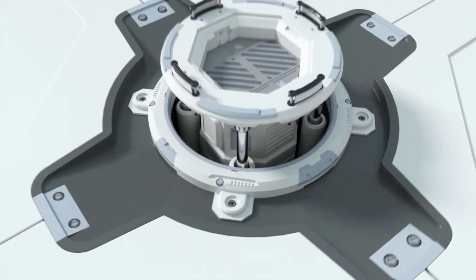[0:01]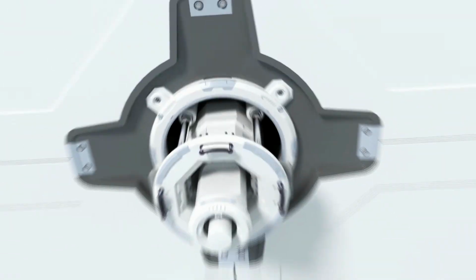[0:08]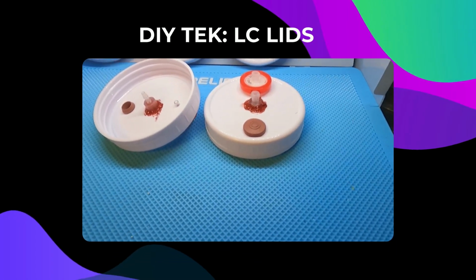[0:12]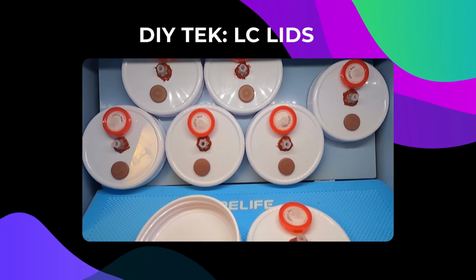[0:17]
Welcome back, fungi friends. Check out these beautiful liquid culture lids. Want to make your own? Stick around, we'll show you exactly how.
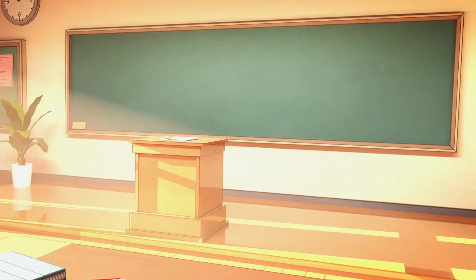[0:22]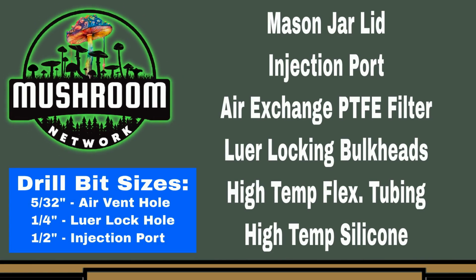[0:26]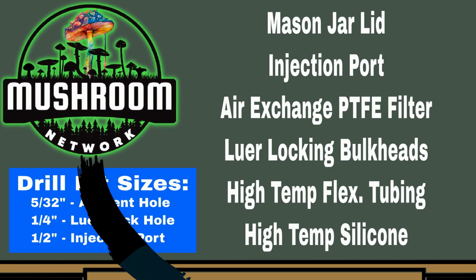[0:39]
For this do-it-yourself tech project, you'll need a mason jar lid, injection port, air exchange, PTFE syringe filter, luer lock bulkheads, high temp flex tubing, and high temp silicone. Let's get into it now.
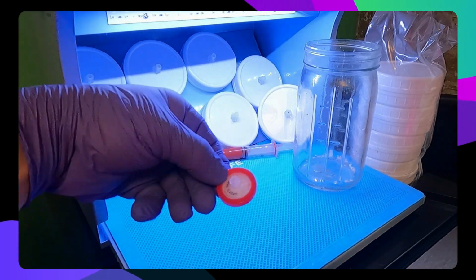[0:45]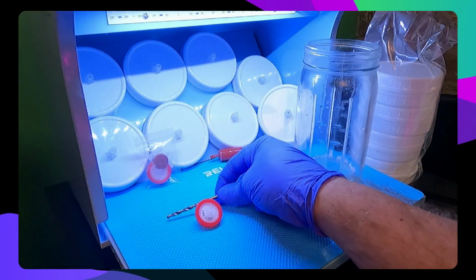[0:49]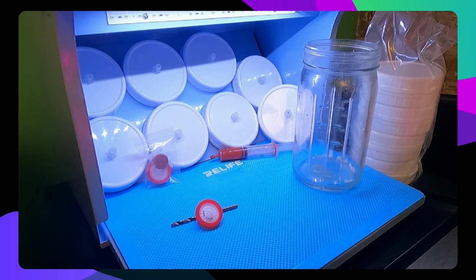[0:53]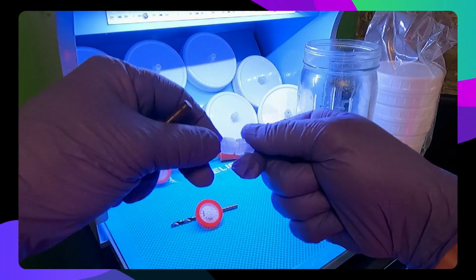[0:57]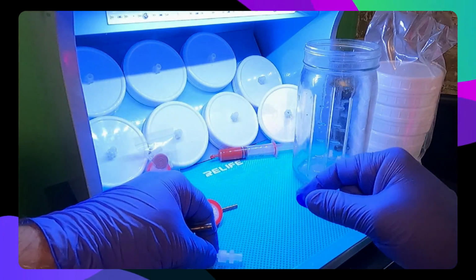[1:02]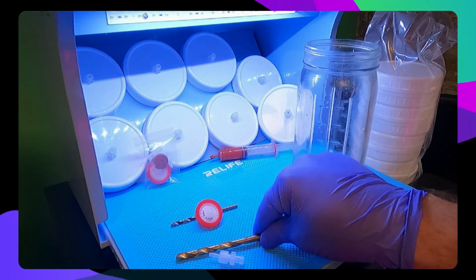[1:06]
Alright, gather round. We're going to let you in on a little secret. You see, during our initial recording of this how-to video, we got a bit carried away with our excitement. We jumped ahead and started installing components and adding silicone before drilling all the holes. Talk about putting the cart before the horse, right?
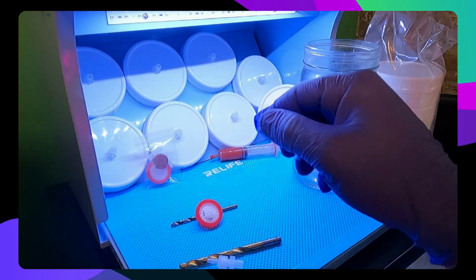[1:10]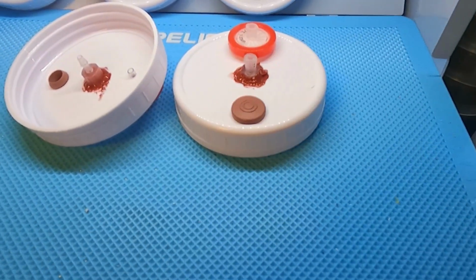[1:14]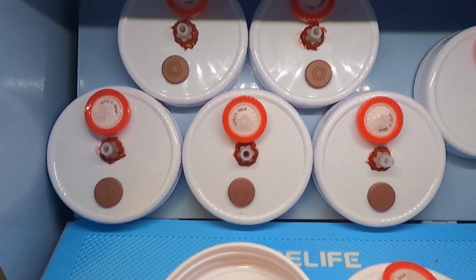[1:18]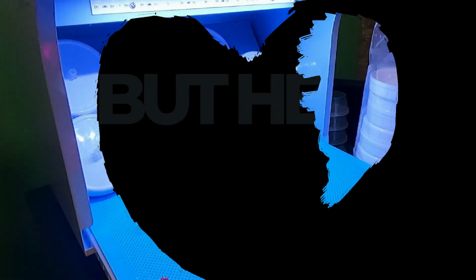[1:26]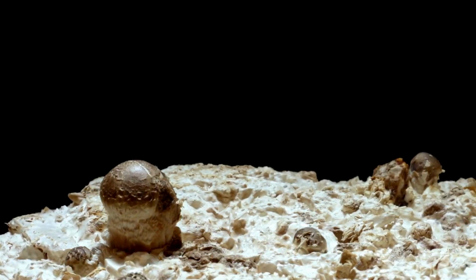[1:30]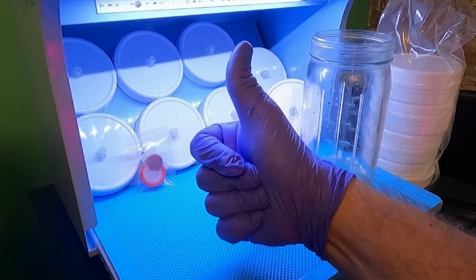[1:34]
Don't be like us. In this one video take, do it the smart way, the efficient way, the Mushroom Network way. Drill all 3 holes first. Yes, you heard it right, folks. Holes first. But hey, no one's perfect. We're all here learning and growing together, one mushroom, or in this case, one hole at a time.
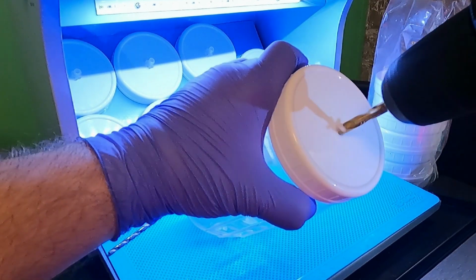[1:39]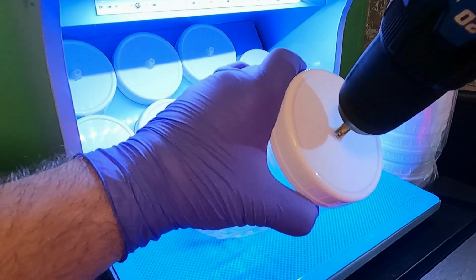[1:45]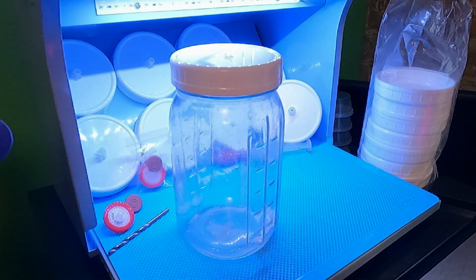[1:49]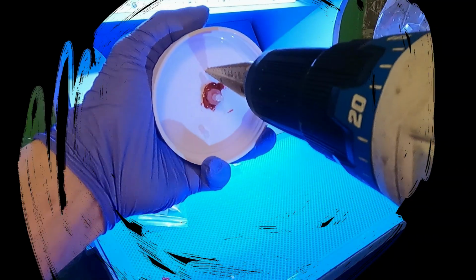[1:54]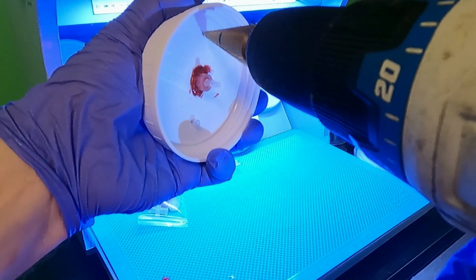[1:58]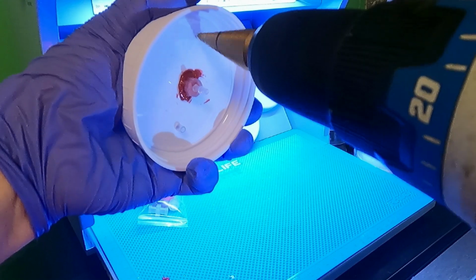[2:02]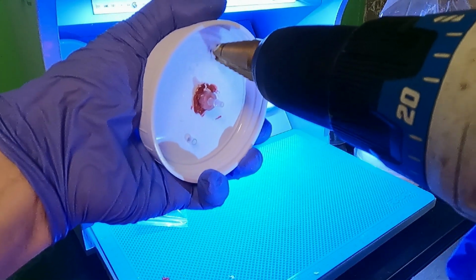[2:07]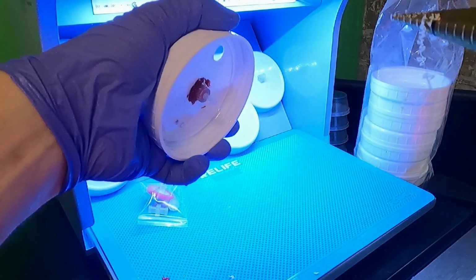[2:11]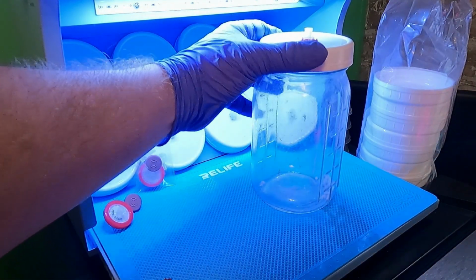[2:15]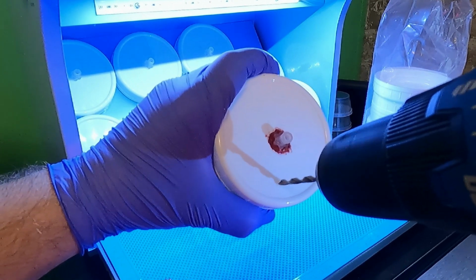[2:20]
Focus first on the center hole for the luer lock. That's a 1/4 of an inch drill bit, but you'll need to expand it slightly for a nice snug fit. Next up is the 1/2 inch hole for the injection port. The final hole is a precise size of 5/32 of an inch drill bit. It should be evenly placed between the center and the edge of the jar lid, for where the air filter will be installed later.
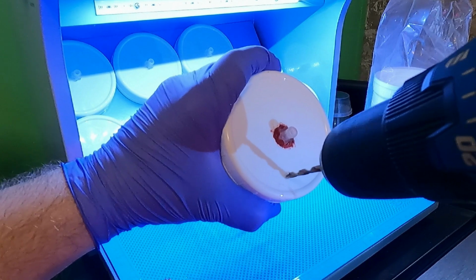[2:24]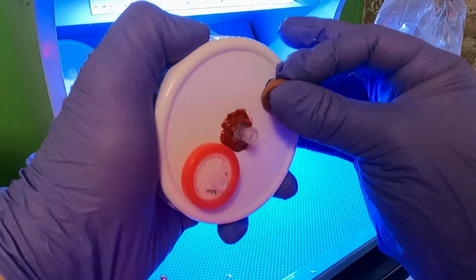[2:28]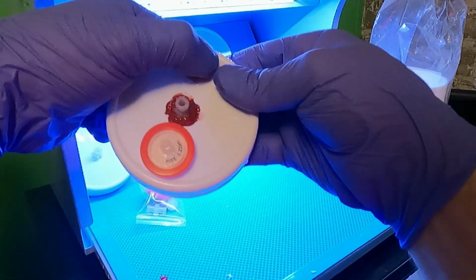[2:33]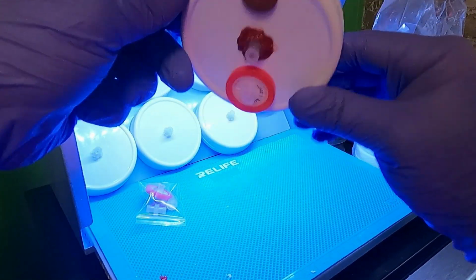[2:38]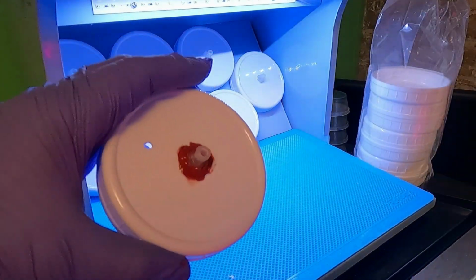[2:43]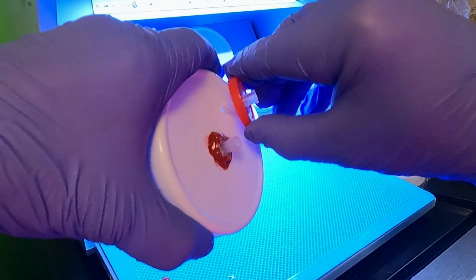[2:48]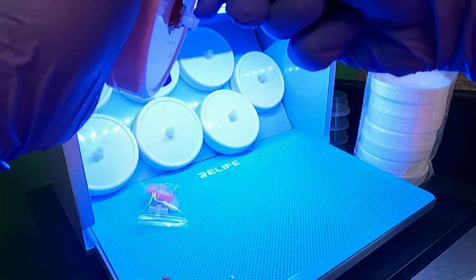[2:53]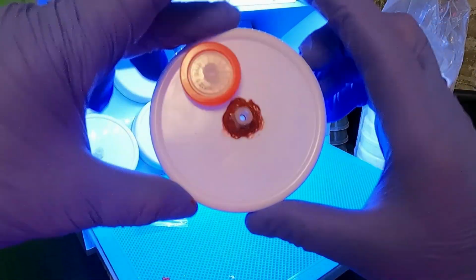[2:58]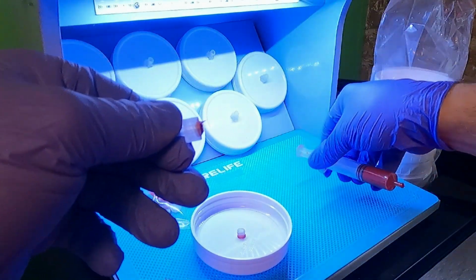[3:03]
Install the injection port first. Then the syringe air filter. And lastly, the luer lock system.
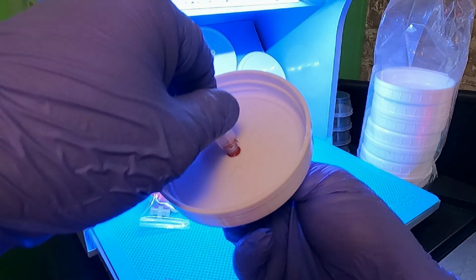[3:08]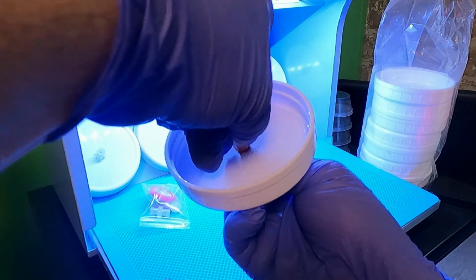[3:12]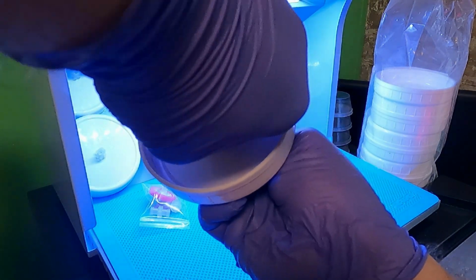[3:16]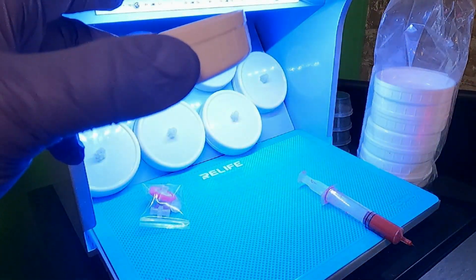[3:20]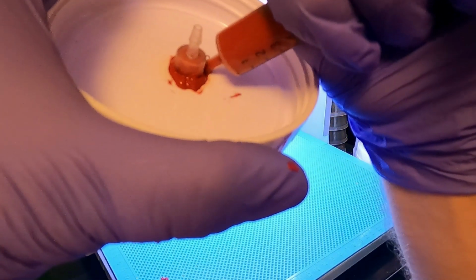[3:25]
You should then add a silicone bead to the female bulkhead. This little trick helps the 2 luer locks to lock together permanently, and also pre-seals the hole. Another pro tip, when dealing with silicone in small spaces, use a syringe. Let them dry. Then apply a small bead of silicone around the high temp tubing attached to the luer lock system.
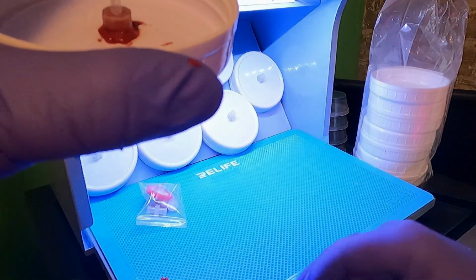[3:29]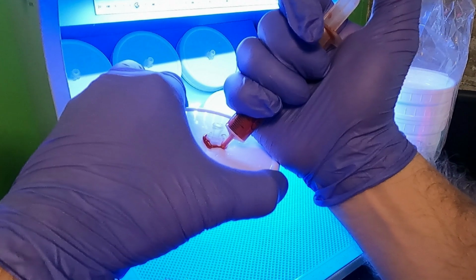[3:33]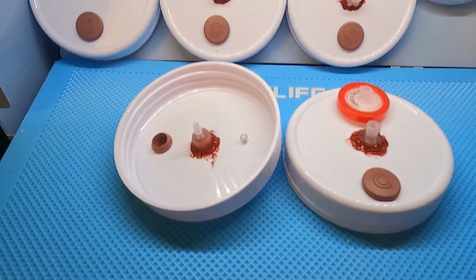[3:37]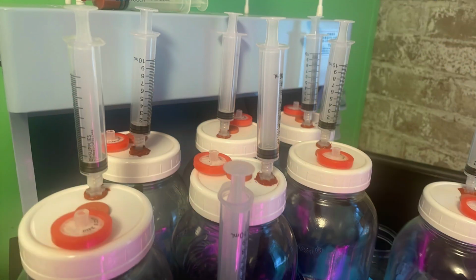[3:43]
Add an exterior heat resistant silicone layer for extra strength. On the outside, keep a luer locking syringe, a stopper, or a cock stopper to prevent contamination from entering. You didn't think we'd forget about that, did you?